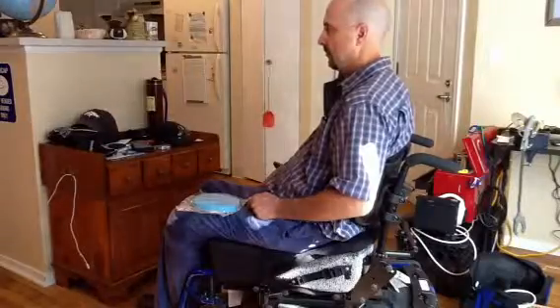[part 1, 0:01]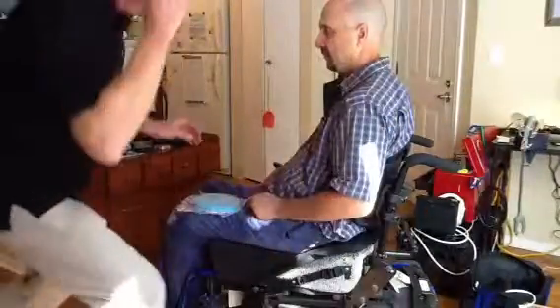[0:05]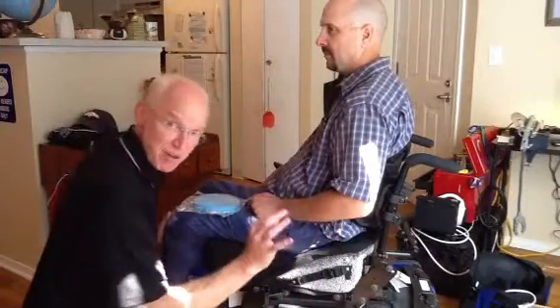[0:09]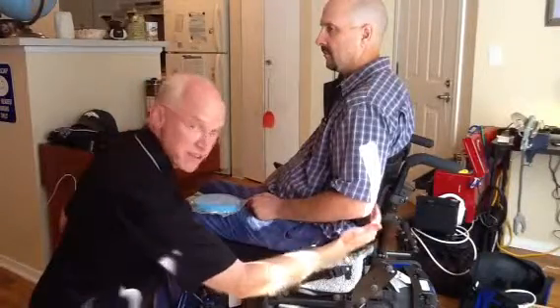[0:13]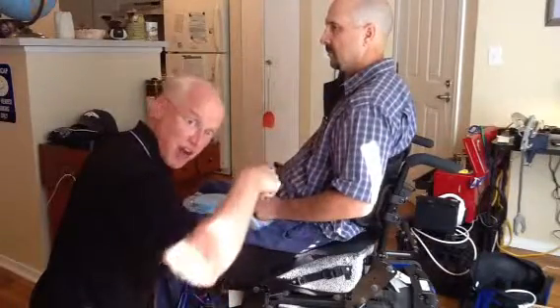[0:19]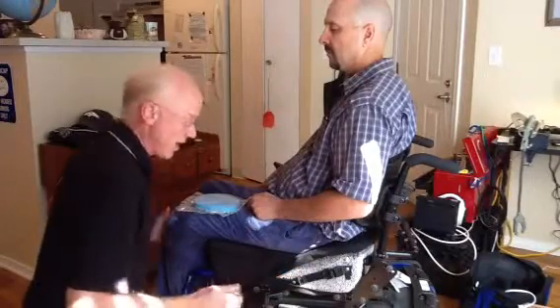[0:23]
Alright, we're here with James Minnick. The previous video, if you didn't watch it, we got James on his new cushion but haven't checked the fit yet because we need to adjust the Java back. So we've fit the Java back to optimize his posture and alignment on the cushion. You want to make sure you've got the posture on the cushion that you're looking for before you check the fit of the cushion. Okay.
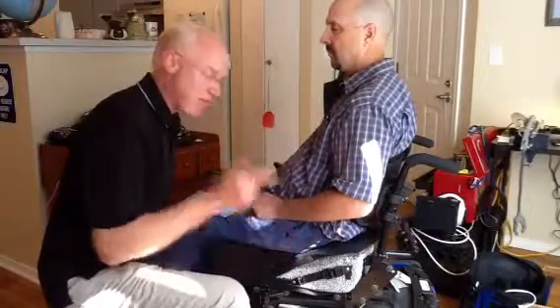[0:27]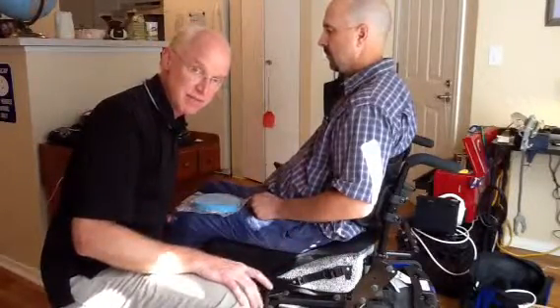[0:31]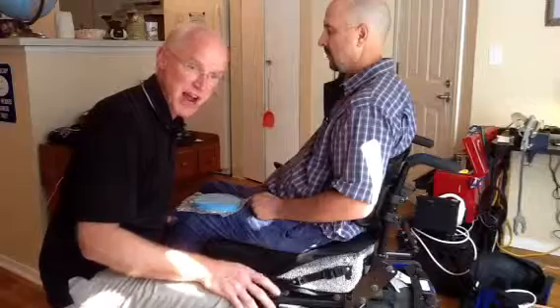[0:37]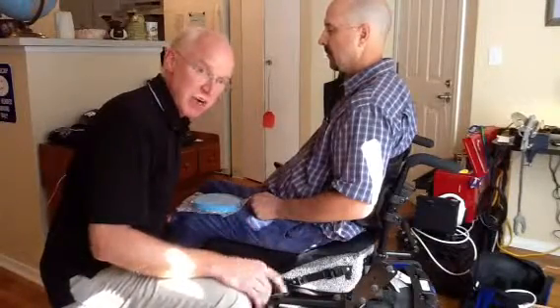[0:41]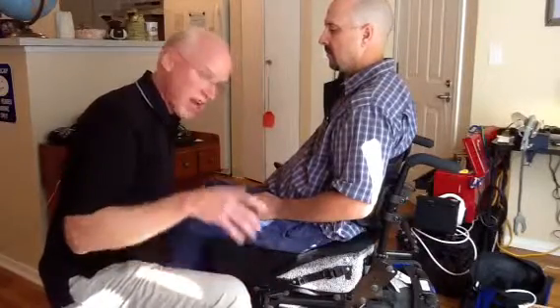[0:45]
Now before I do fit the Ride Custom cushion, before I got James on here, I did a baseline skin check. Okay? So I want to know what the skin looks like before I go onto the cushion, as you would with any other cushion for a high-risk skin client. James is a C6-7 quadriplegic, no sensation, so he is unable to feel or tell exactly what's going on with respect to contact down there.
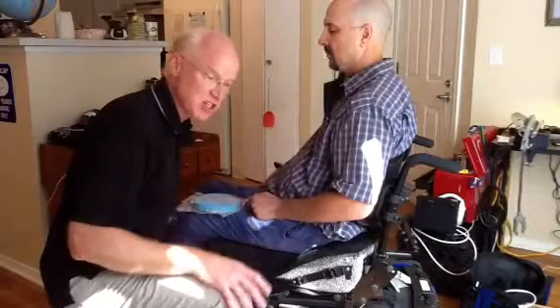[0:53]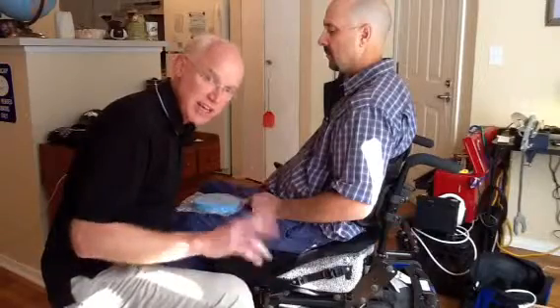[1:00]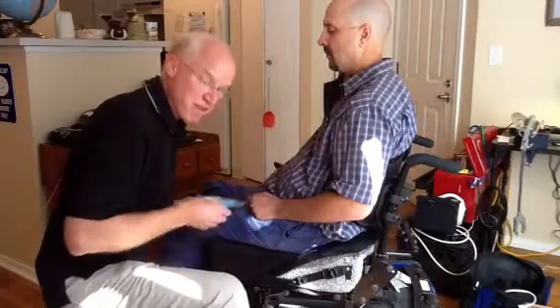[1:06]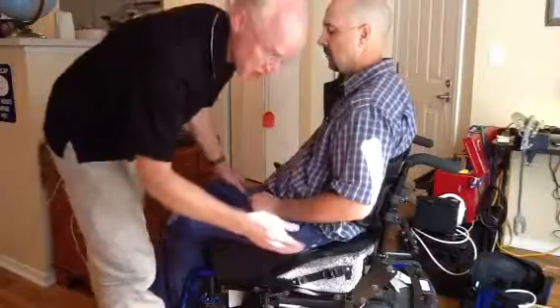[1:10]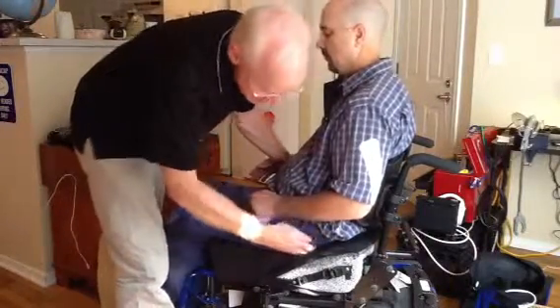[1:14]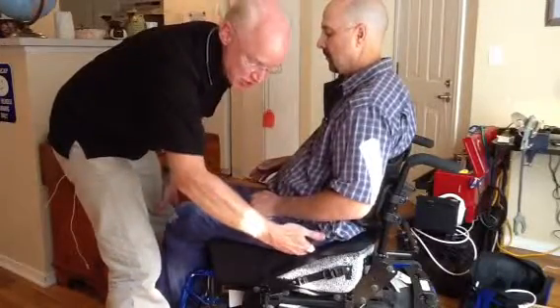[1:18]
So baseline skin check. Next thing we want to do is I want to validate or verify the two qualities of the Ride Custom cushion. The first one being the offloading characteristic. So my first go, no-go for the Ride Custom cushion is position of the trochanters. And I'll go in here, I'm going to palpate between him and the cushion. And I'm going to find the weight-bearing aspect of his greater trochanter, and I'll slide my hand right in there.
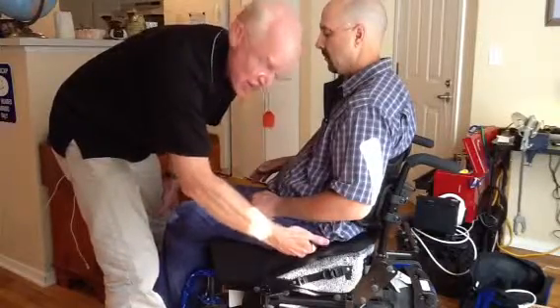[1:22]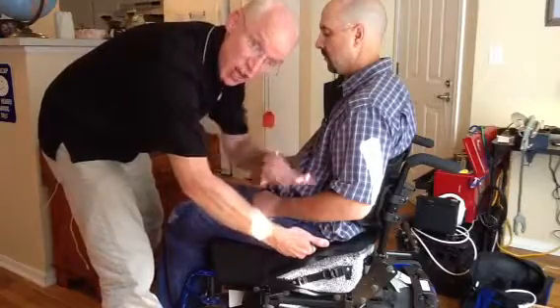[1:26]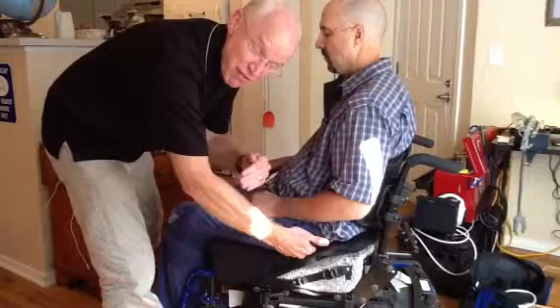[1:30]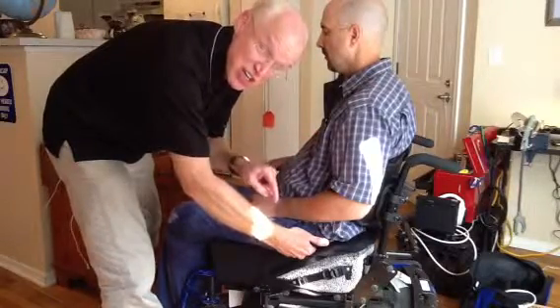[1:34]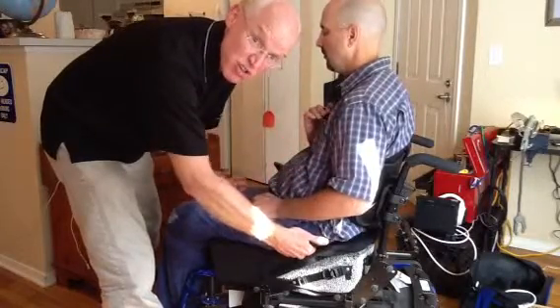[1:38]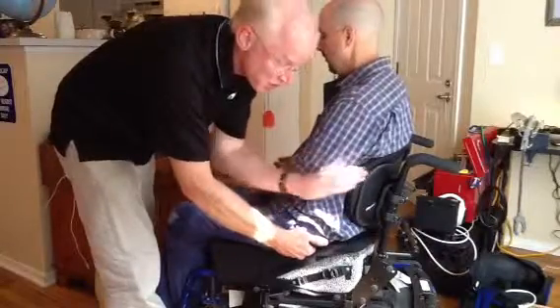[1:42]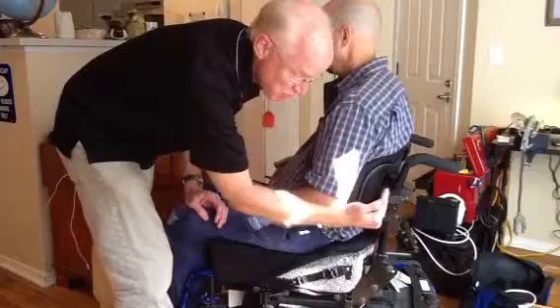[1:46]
I want to make sure that that trochanter is resting in the trochanter contour, that little relief that should be right there. If he's too far back or too far forward, I want to adjust the position of him on the cushion, or the cushion on the chair, or the back on the chair to get those trochanters in the right position. Now we had paid attention to that when we adjusted the back support. Initially my back support was too far back, so I brought it forward to get this in line.
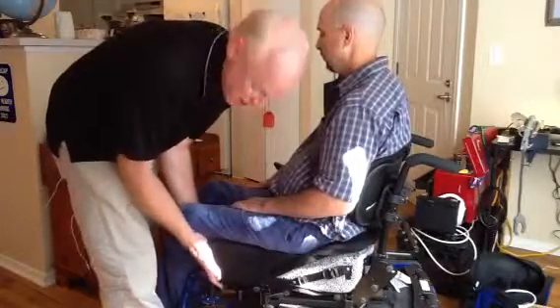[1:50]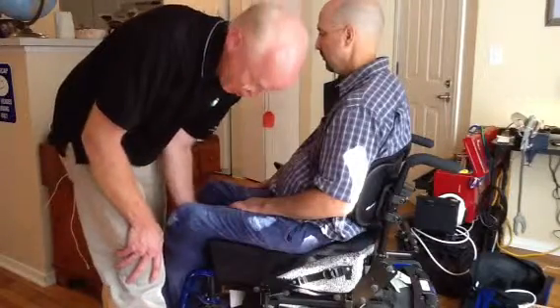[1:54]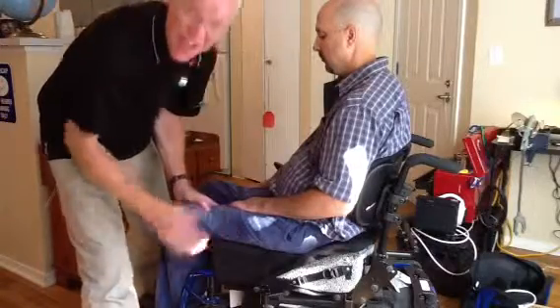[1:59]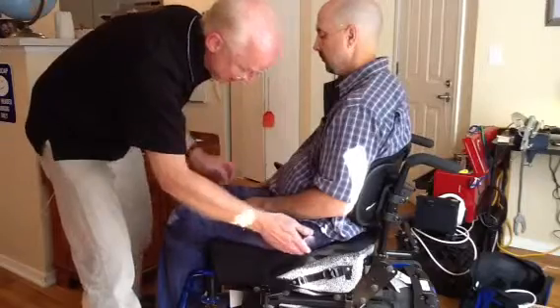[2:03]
The front of the Ride Custom cushion is flush with the seat pan on the front. Footrest height is correct. We got good thigh loading. We're ready to move forward. Trochanters are in the right place.
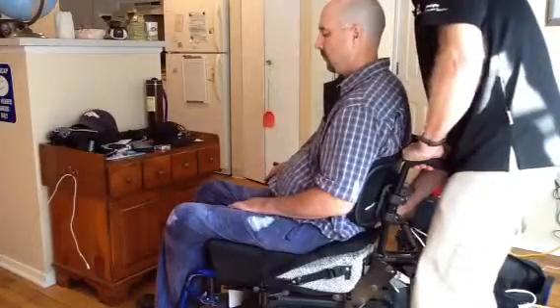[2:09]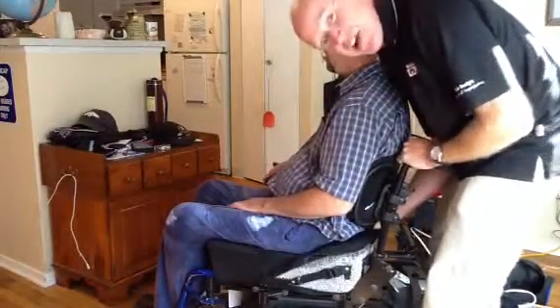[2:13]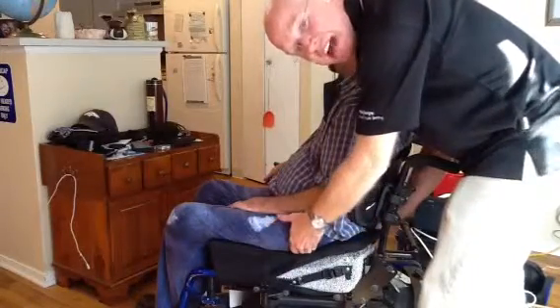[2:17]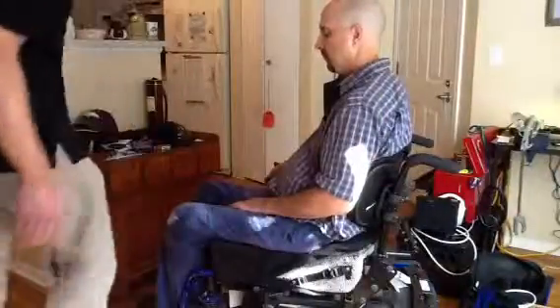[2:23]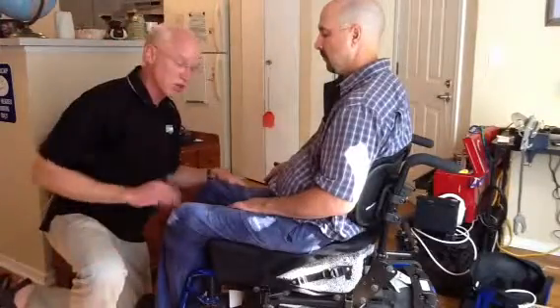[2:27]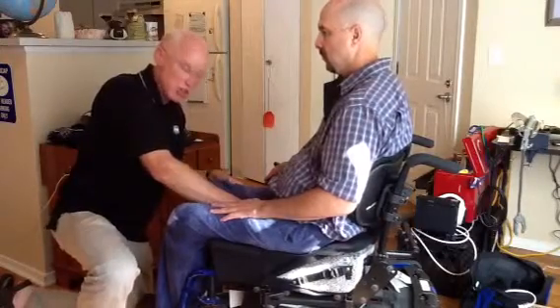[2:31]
Next thing I want to do is I want to reach back between him and the back. I'm checking the coccyx and sacrum. There's no contact at the coccyx and sacrum. That's what we want. There's soft tissue contact, but no heavy bony loading at the trochanters. I also want to check that we're not crowding too far into the groin area as well too. So I'm just going to slide my hand down, make sure that we're not too close there. That's an easy modification. Okay?
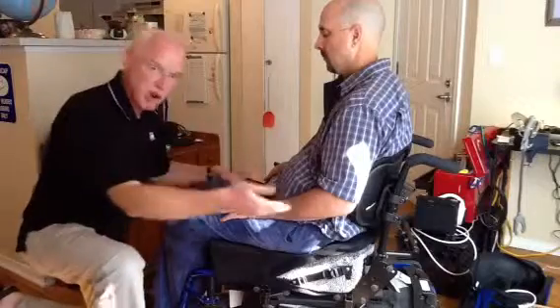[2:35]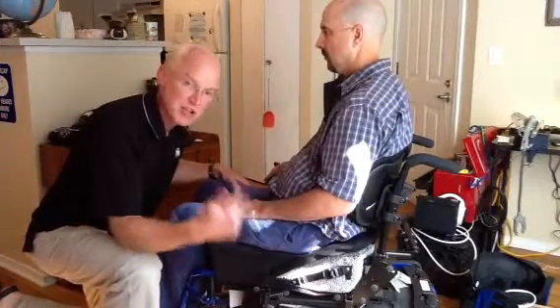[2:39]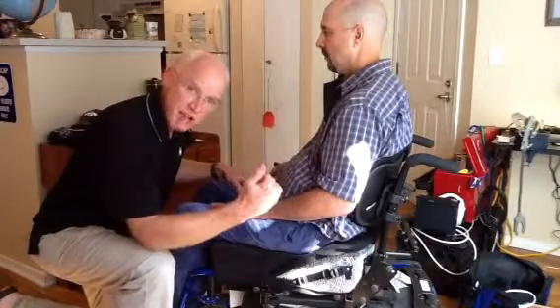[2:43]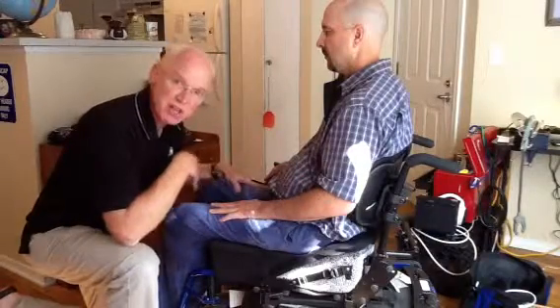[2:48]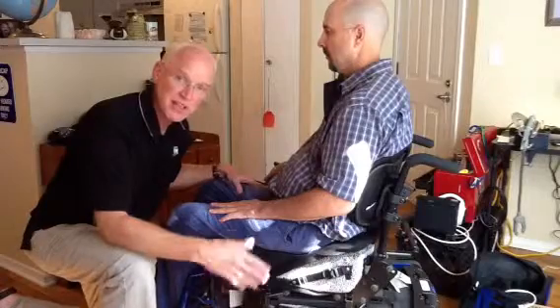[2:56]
So all of the trochanters, palpate trochanters, don't go forward any further until those trochanters are where they need to be. Then I'm checking the coccyx and sacrum. We don't want any contact there. And I want to make sure that he's not crowded too severely in the perineum. I want good air space at the coccyx and sacrum and the perineum to get airflow underneath them as well too. Not to mention keeping pressure off of those sensitive areas.
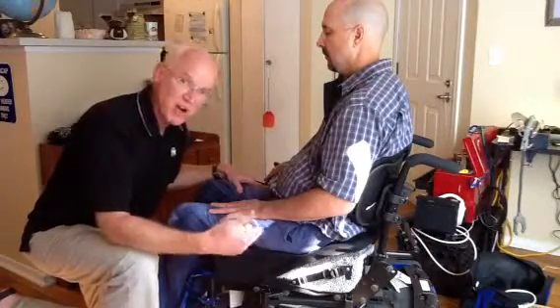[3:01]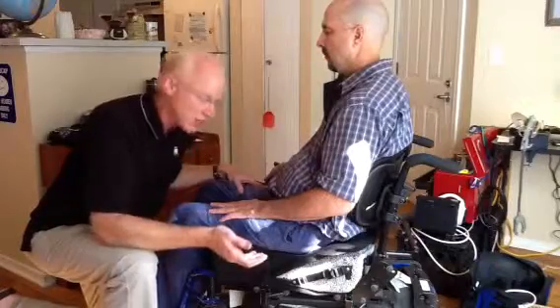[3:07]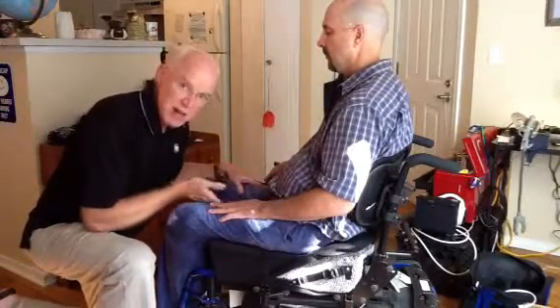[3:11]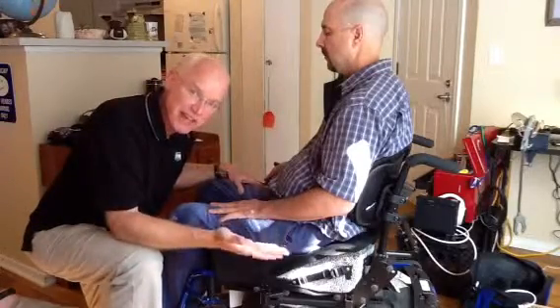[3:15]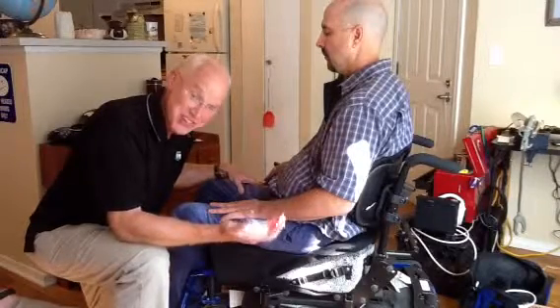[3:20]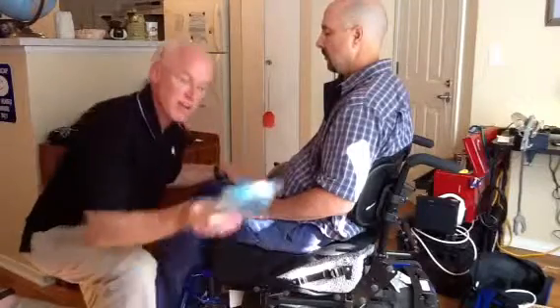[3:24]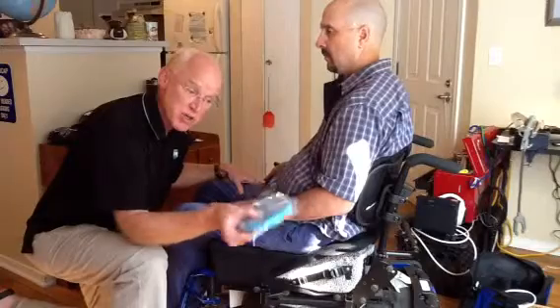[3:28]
The next thing we need to do is establish if his ischial tuberosities are properly offloaded. Now, typically in our clinic, the Aspen Seating Clinic, if we've got the sacral area open and or the groin area, we'll literally insert our hand underneath the client and palpate the ischial tuberosities and see if there's sufficient clearance. But each cushion comes with a gauge though. Another thing is this gauge, which is the Ride gauge, which is going to collapse if he's making contact.
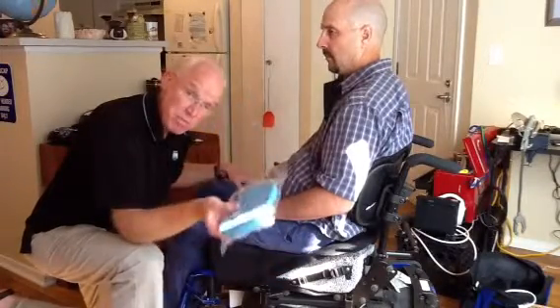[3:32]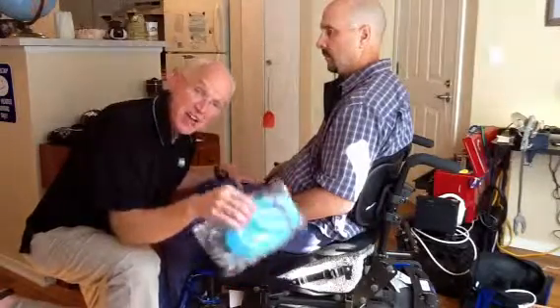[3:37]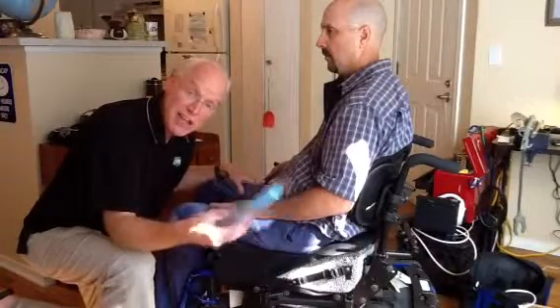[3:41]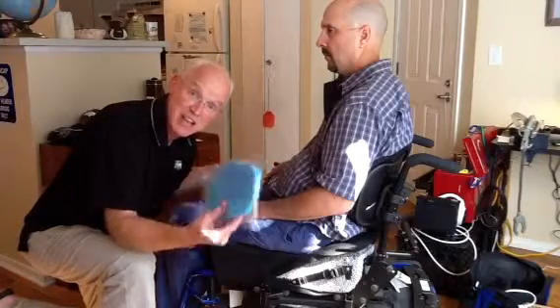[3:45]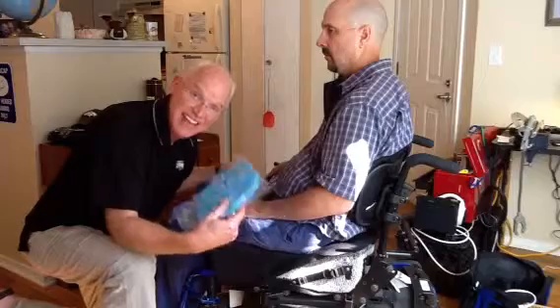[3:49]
I'm going to help James lean forward, slide this underneath him, underneath the cover, in the well of the cushion. Then we'll bring him upright, and then we'll repeat that and look at the gauge and see if he's making contact or smashing this gauge, telling us that we have insufficient clearance at the ischial tuberosities. Okay, you ready to try this?
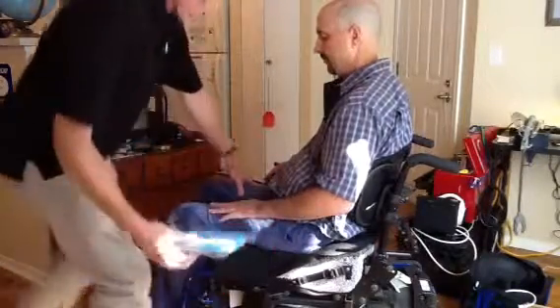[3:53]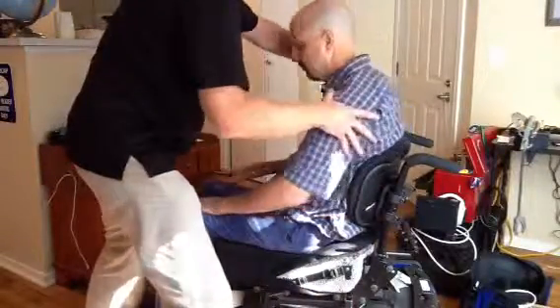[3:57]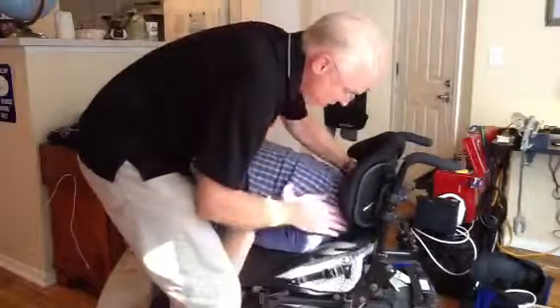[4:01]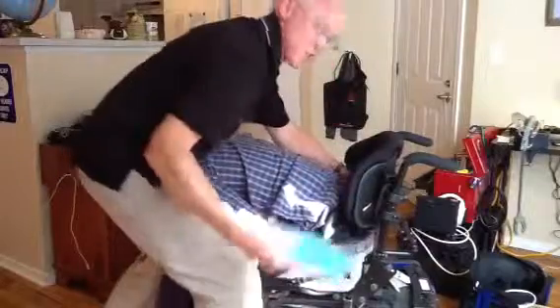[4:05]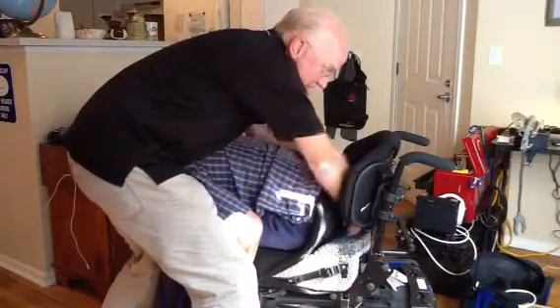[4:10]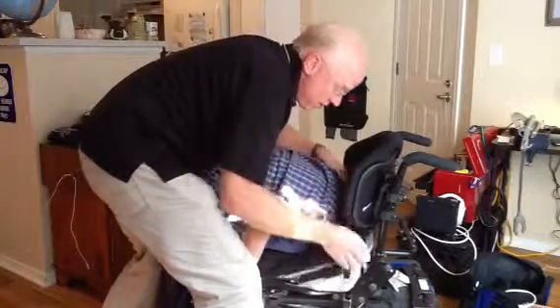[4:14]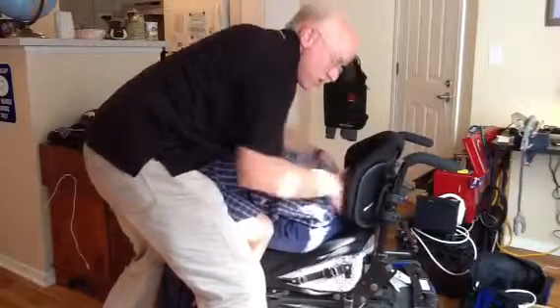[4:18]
All right, James. All right, so I'm going to put my gauge right here where I can grab it. Go ahead and lean forward. Oftentimes, I find the quads that I work with are able to just fold themselves in half. Instead of putting this in the well before, I can just slide this in underneath him, rest it down in the well, get the cover back over the back corners of the cushion. Okay, James, come on back up.
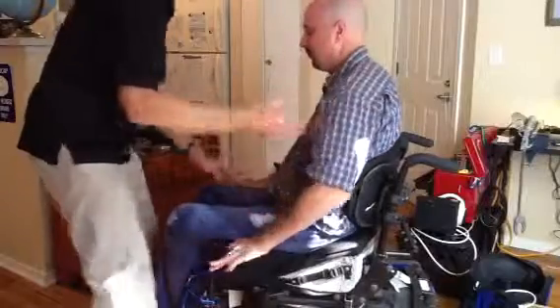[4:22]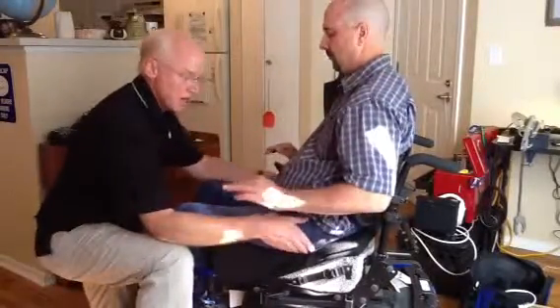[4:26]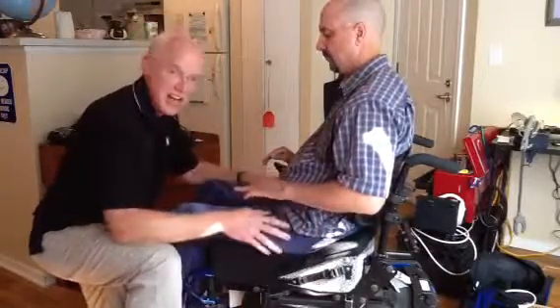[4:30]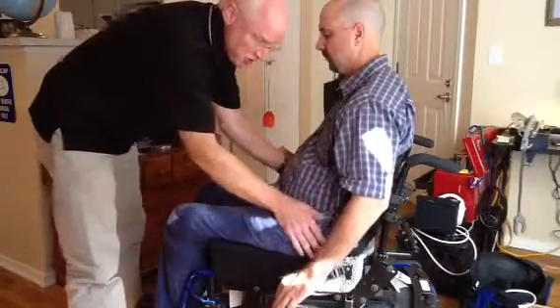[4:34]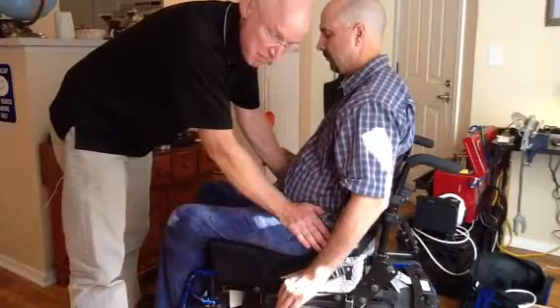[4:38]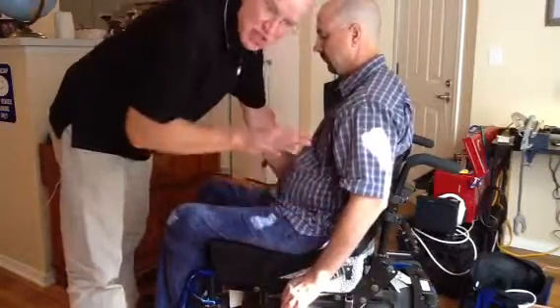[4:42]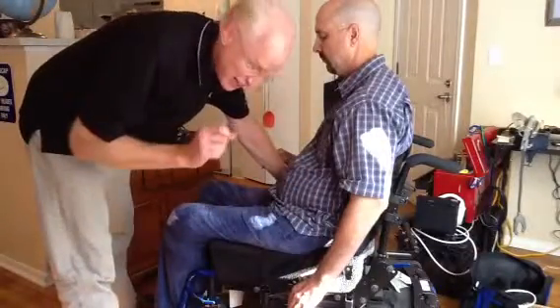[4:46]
Alright, so I've got him back on the cushion. He's maintained his position. The gauge is underneath him. What I'm going to do is come in and simulate a little bounce down over a threshold or a bumpy road. I'm just going to give a little overpressure to him, get those ischials to go down a little bit to see if that impacts that clearance.
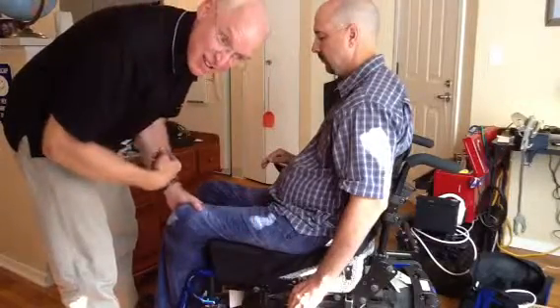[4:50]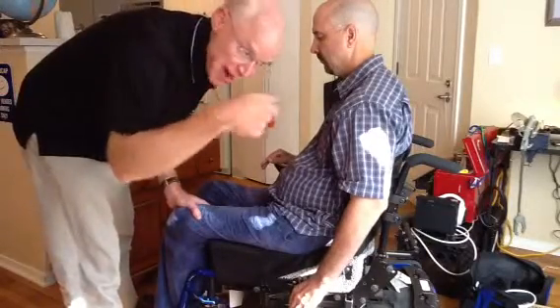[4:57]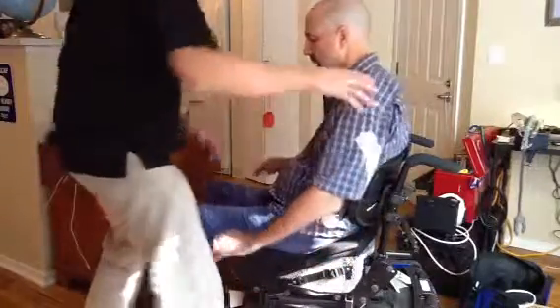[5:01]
Okay, so now we've sat on it. What we're going to do is lean forward again, and I'm going to make sure that that gauge still has sufficient thickness. What you won't be able to see is me actually looking at it, but I'll pull it out so we can see it on the video. Okay. So James, lean forward.
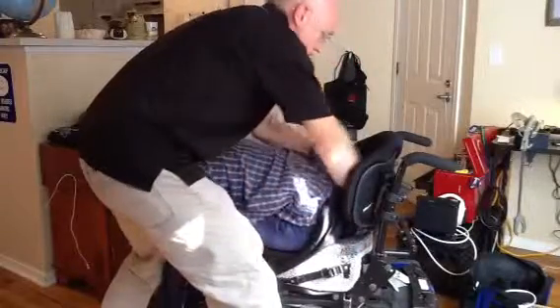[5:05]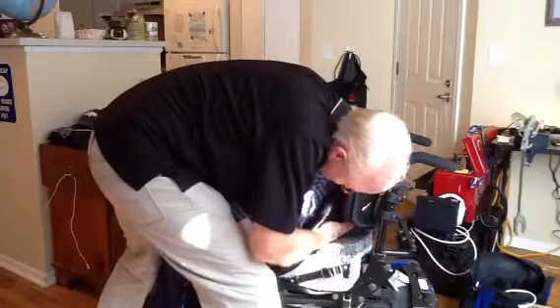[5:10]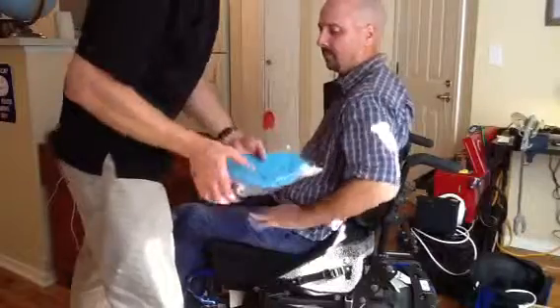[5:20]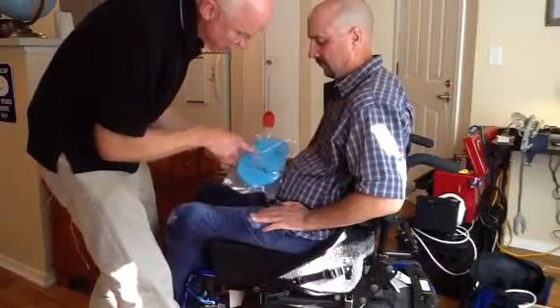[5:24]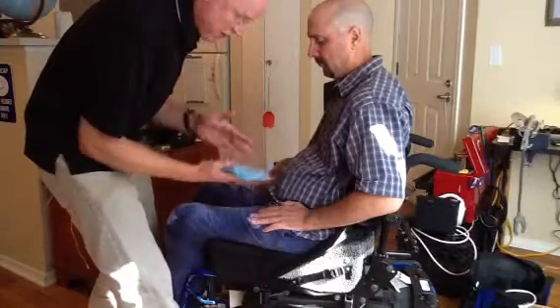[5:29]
And I can look down in there. It looks like there's no contact at all. I'm going to pull it out. And what you will see here, James, you can go ahead and sit back up, sir. What you see here is that all you've got, James, is just a real mild imprint of the spacer fabric cover. No ischial imprint there.
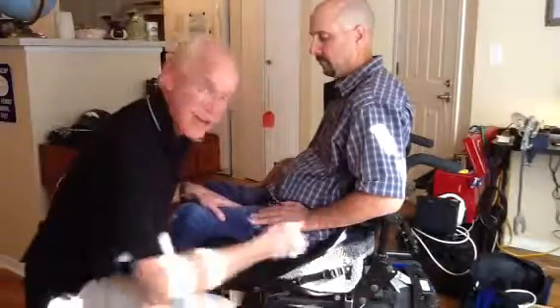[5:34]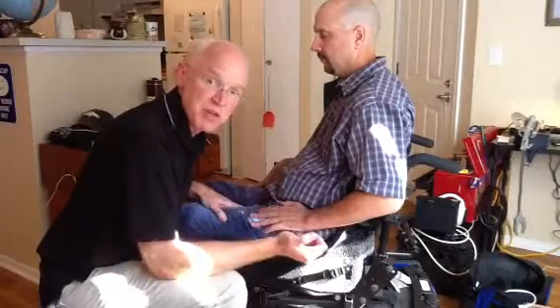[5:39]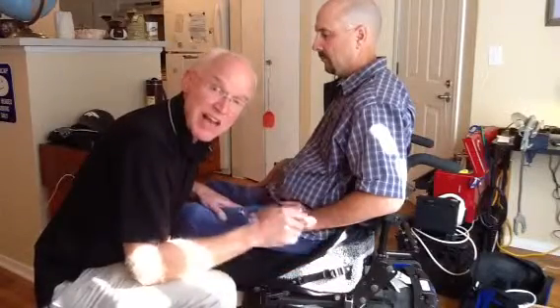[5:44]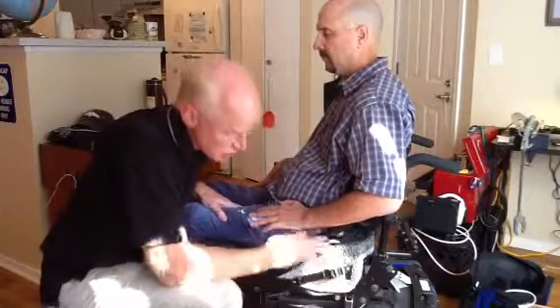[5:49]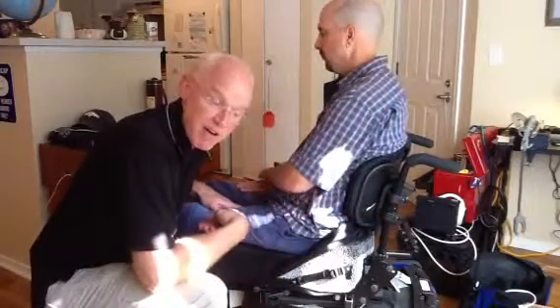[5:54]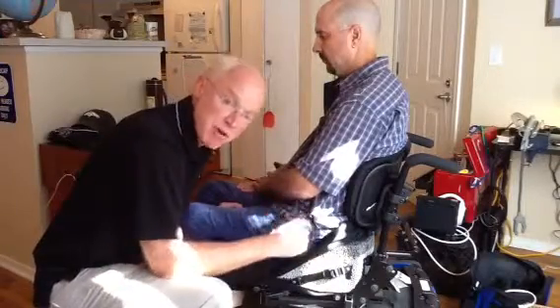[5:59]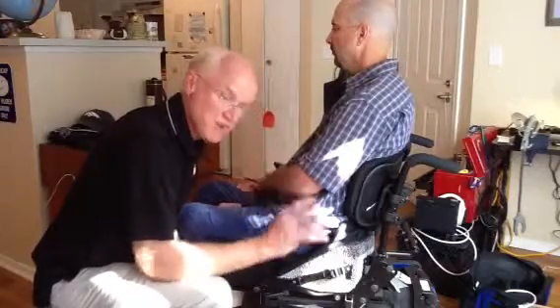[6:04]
So that should give you good confidence that we've got trochanters properly positioned and offloaded, coccyx and sacrum, perineum, and ischial tuberosities. A future video will tell you how to address any shortcomings of those if you're fitting it, how to adjust to improve ischial clearance, which you can do with the cam straps or modifications to the shape or any other of these areas. But what we just did was go through verification of proper orientation of those bony prominences and proper offloading. So we just verified the offloading characteristics of the cushion.
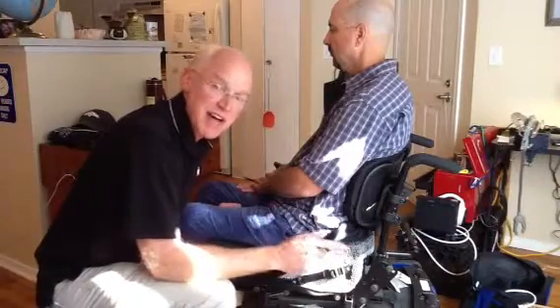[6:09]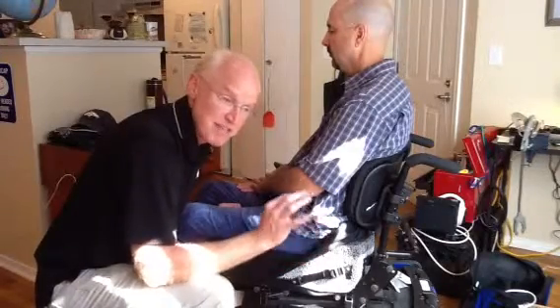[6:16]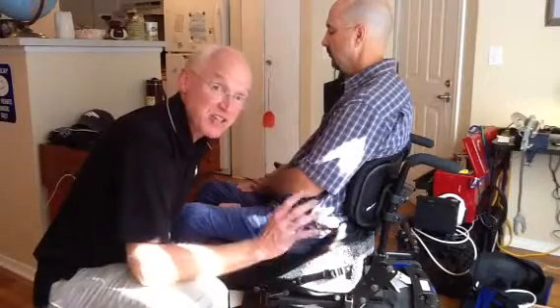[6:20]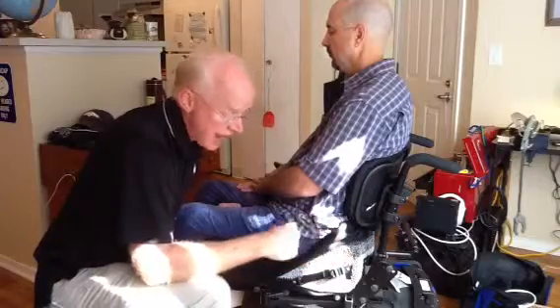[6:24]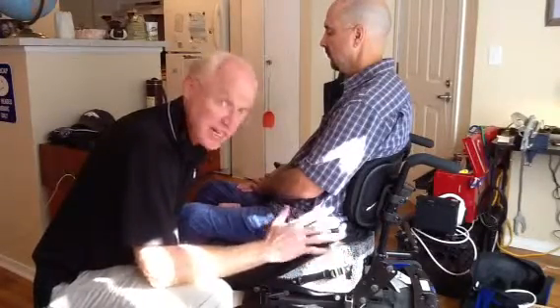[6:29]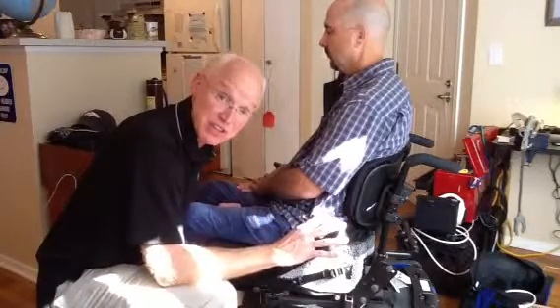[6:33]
Now we have to verify the loading qualities of the cushion, which is the most difficult part. And there's only one way to verify the loading qualities of any cushion, and that is through skin checks. So we did the baseline skin check. I have validated and adjusted, although we needed no adjustment, the offloading characteristics of the cushion.
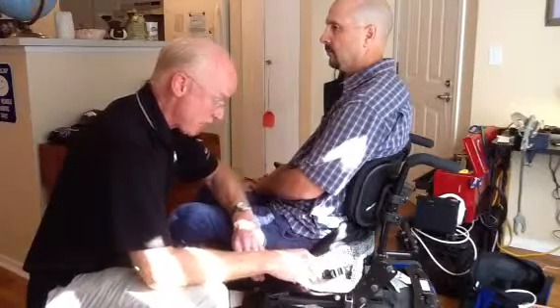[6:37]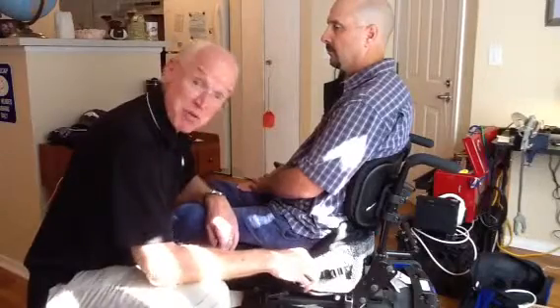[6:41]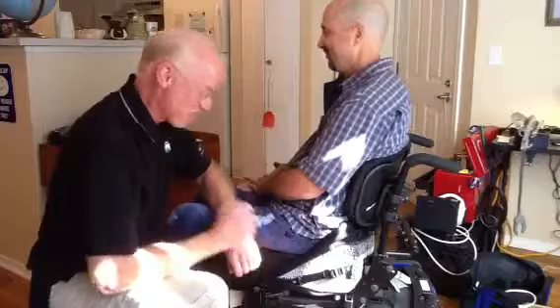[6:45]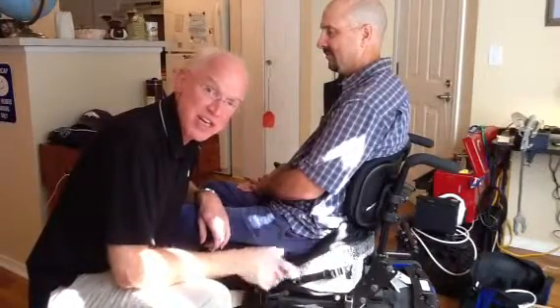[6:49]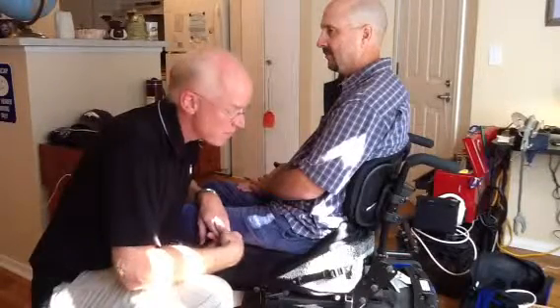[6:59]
Now what we're going to do is I'm going to look at my watch, and I'm going to say, it's 10 till 5. That's almost happy hour. Let's go. But we're going to sit for 30 minutes, and then we're going to do a skin check. Skin check looks good. I'm going to go back on there for an hour, and I'm going to instruct James to slowly move up in his sitting tolerance to make sure that his skin responds favorably.
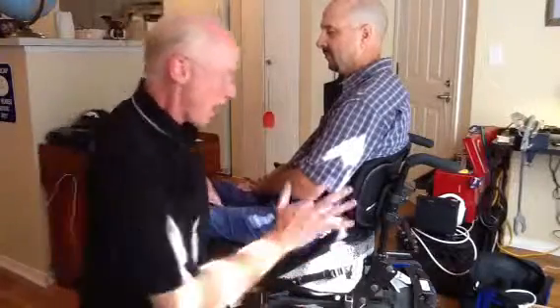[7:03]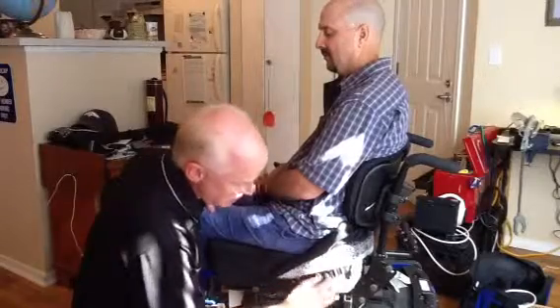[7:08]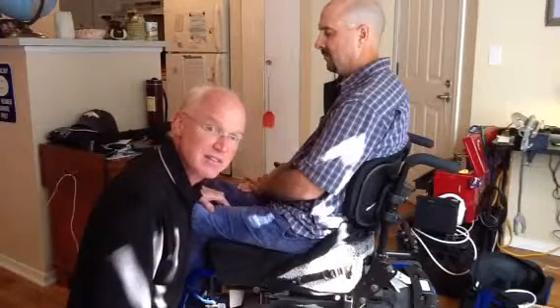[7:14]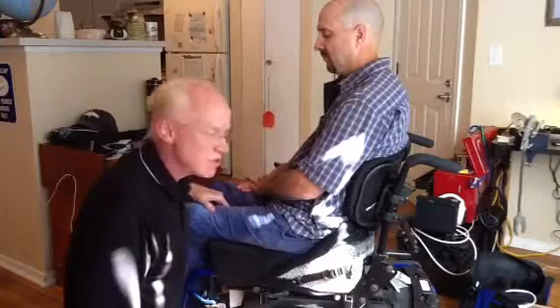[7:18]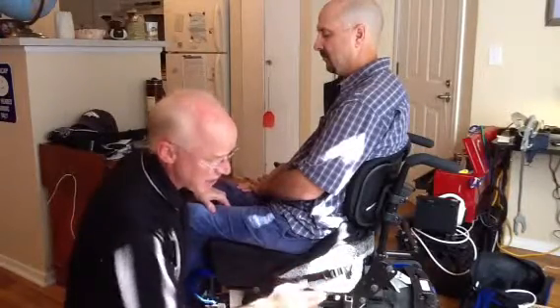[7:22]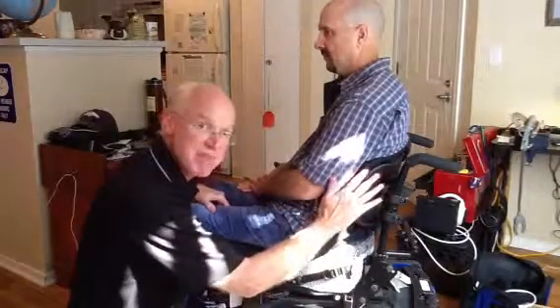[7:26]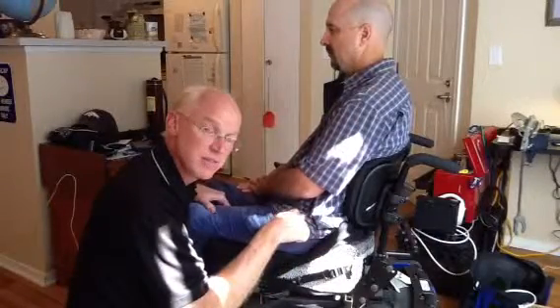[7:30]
So that's it. To review, I'm going to take the cushion out of the box. I'm going to make sure all these cam straps are just snug. I'm going to make sure the cushion is positioned correctly on the chair. I'm going to do a baseline skin check on James. I'm going to assist him in a transfer, if needed, onto the cushion back support. I'm going to adjust my back support to make sure I get the posture I need on the cushion.
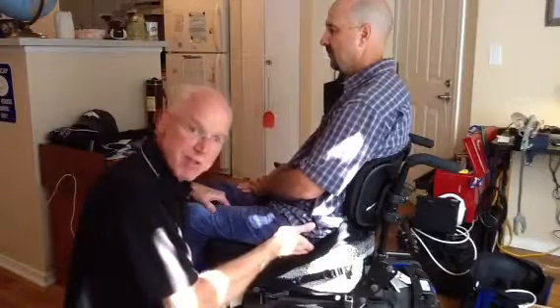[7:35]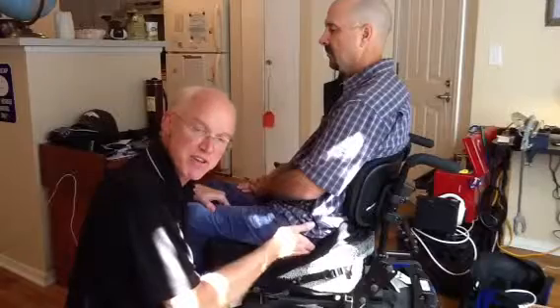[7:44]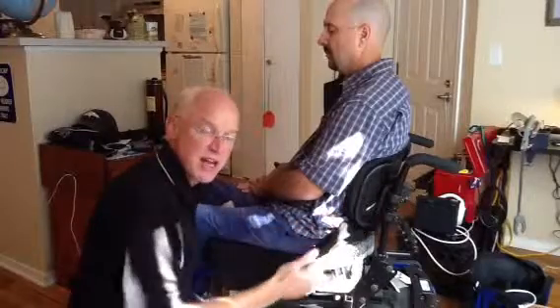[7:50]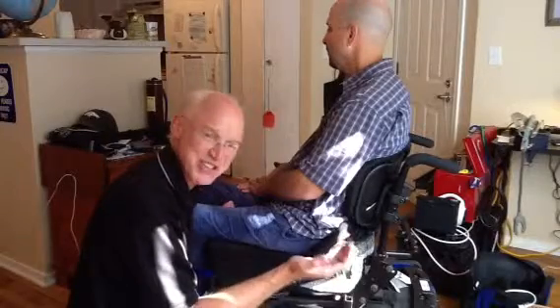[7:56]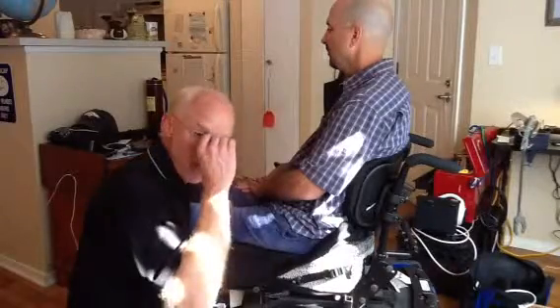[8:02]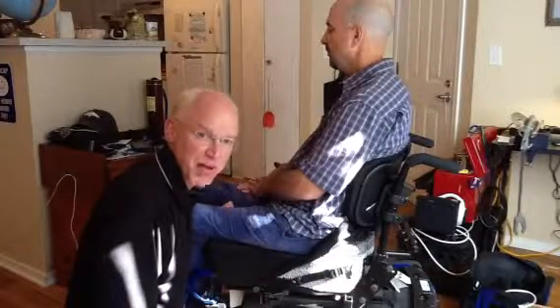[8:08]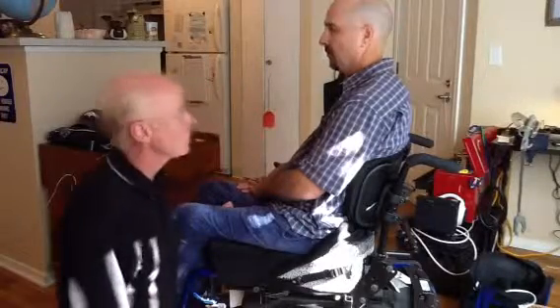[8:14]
Then I'm going to go back to the cushion and palpate the trochanters for the right position of the trochanters in that trochanter relief. Soft tissue contact at the trochanter is okay, but you should not feel heavy bony loading. I'm going to then check the groin area, coccyx and sacrum, and then either use palpation to reach underneath and check the ischial tuberosities, and/or the gauge to evaluate offloading. Once I have offloading adjusted and verified, we're going to start our sitting assessment, build tolerance to the cushion, watching skin, and ensuring that the fit is satisfactory. Feeling pretty good? Feels great.
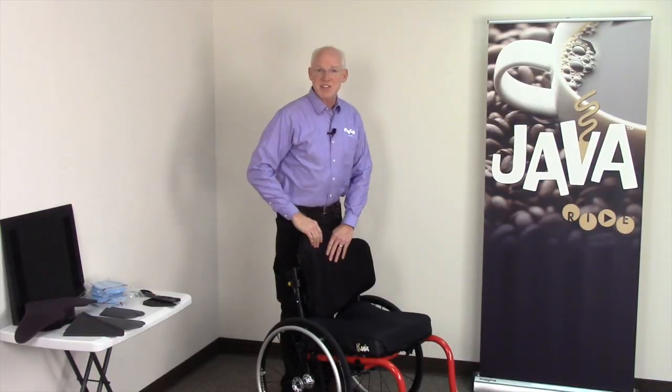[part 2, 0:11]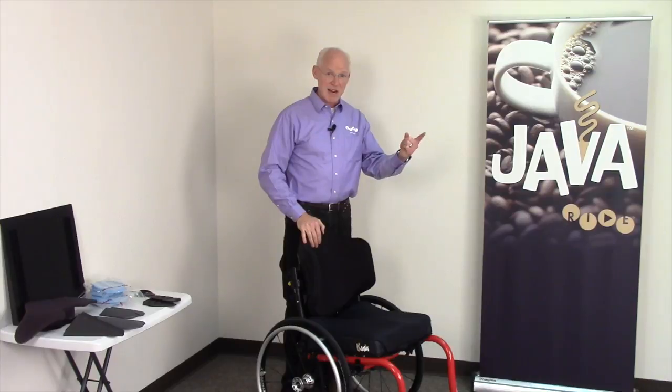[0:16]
I'm Tom Hetzel of Ride Designs. This is part two of the Java Cushion Trilogy: theory, fitting, and then fitting with the back support.
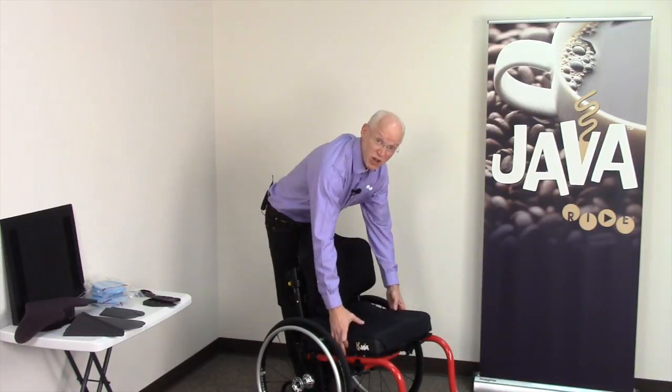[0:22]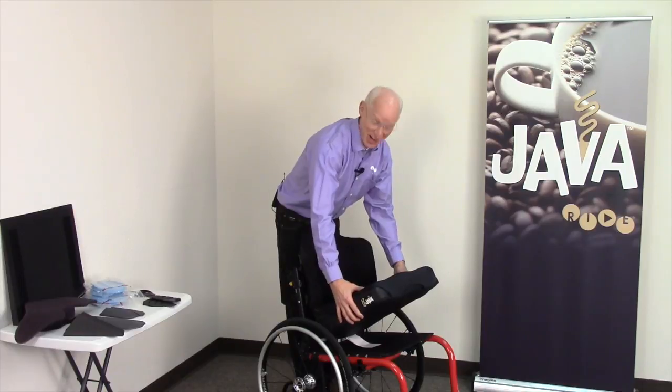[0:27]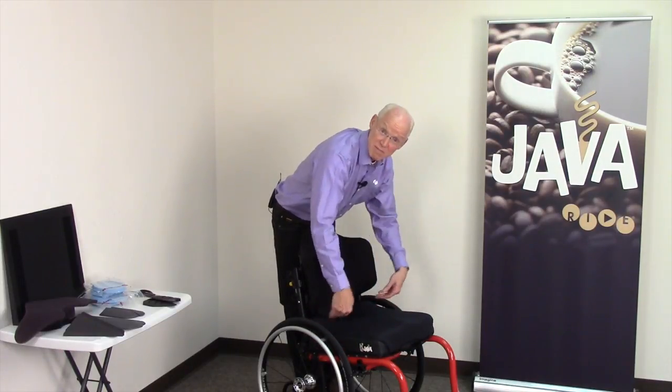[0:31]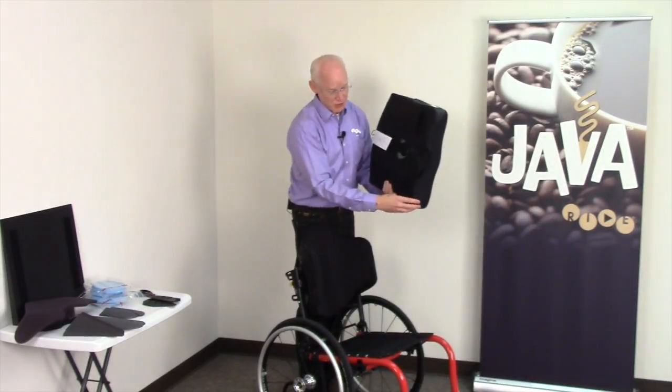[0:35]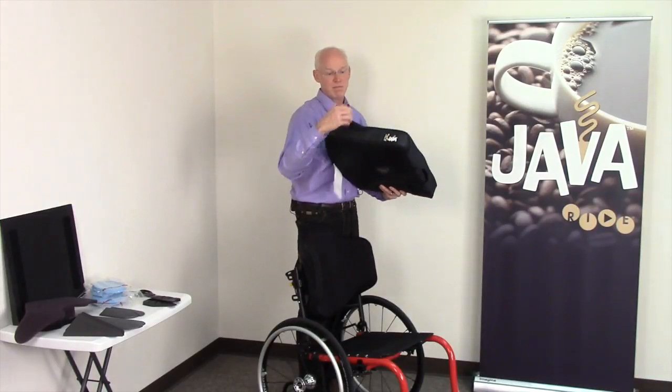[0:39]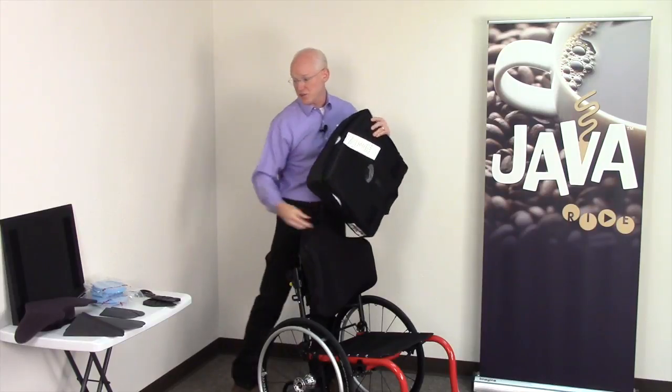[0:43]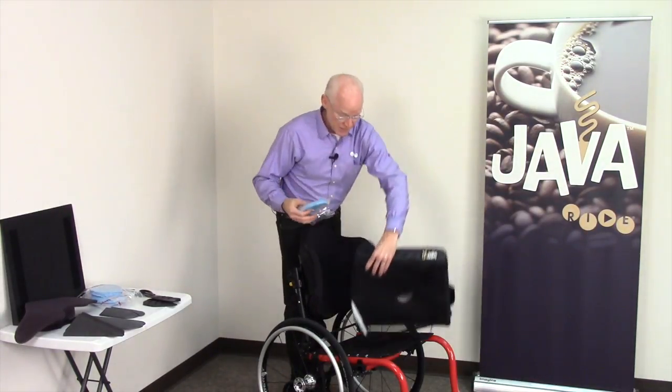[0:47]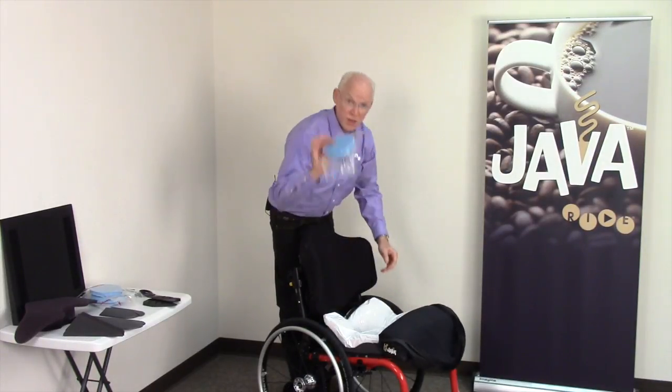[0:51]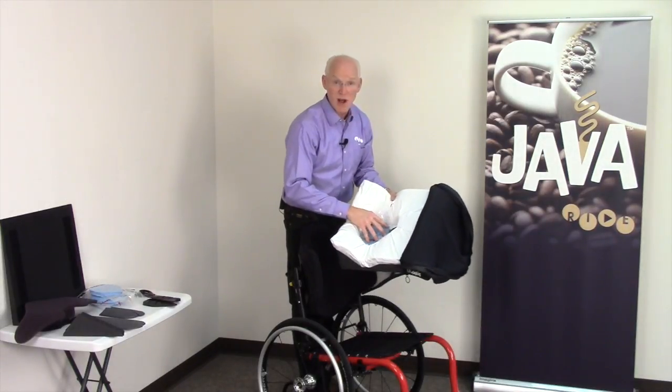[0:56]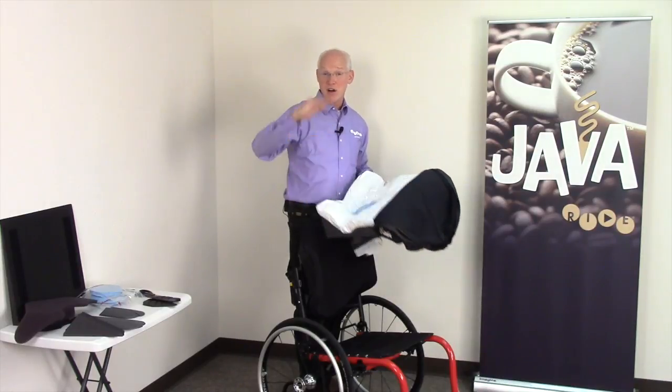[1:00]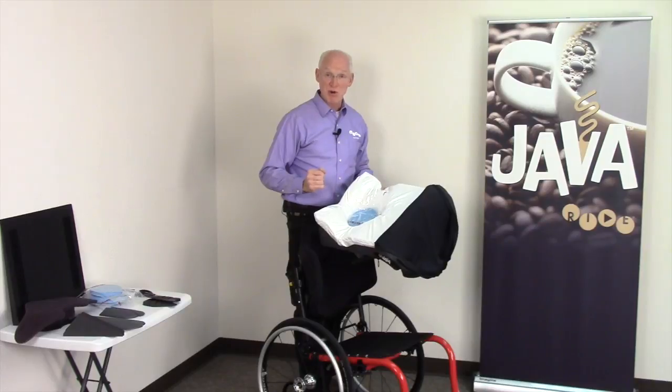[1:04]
When fitting the Ride Java Cushion, it's important to, first of all, get the cushion correctly onto the chair. That's getting the back corners to the back of the chair. Before transferring the client onto the cushion, you'll need to place a gauge, this is a gauge that comes with the cushion, in the well. The well gauge is placed down in the well. This is going to help us to determine how far he is offloaded from his ischial tuberosities.
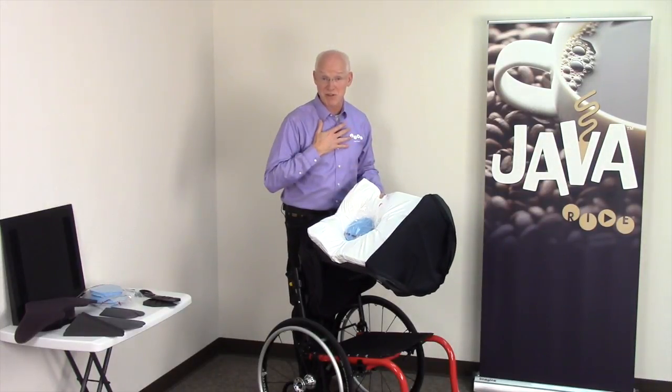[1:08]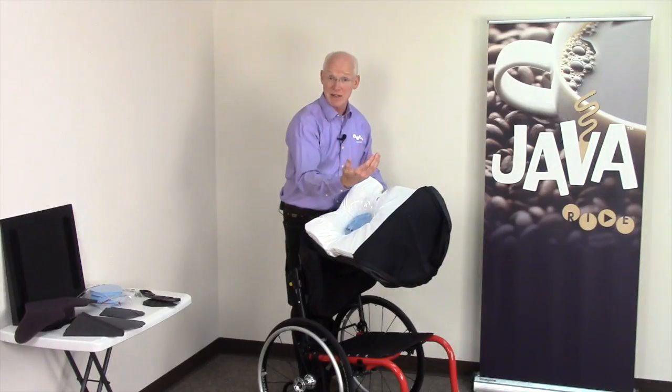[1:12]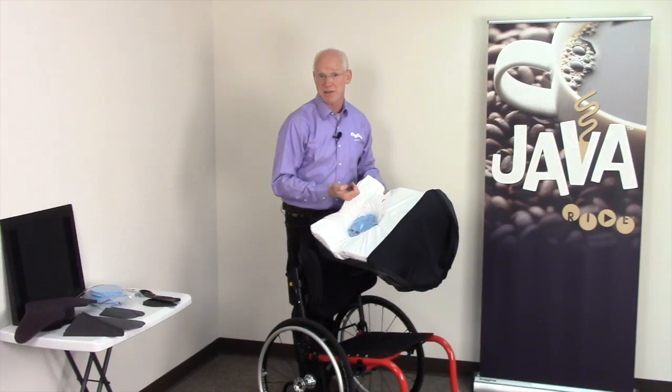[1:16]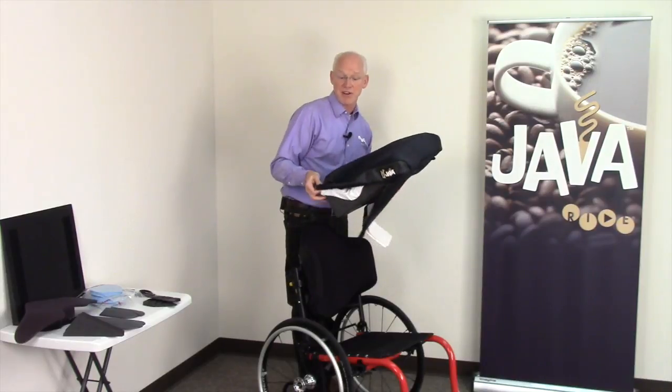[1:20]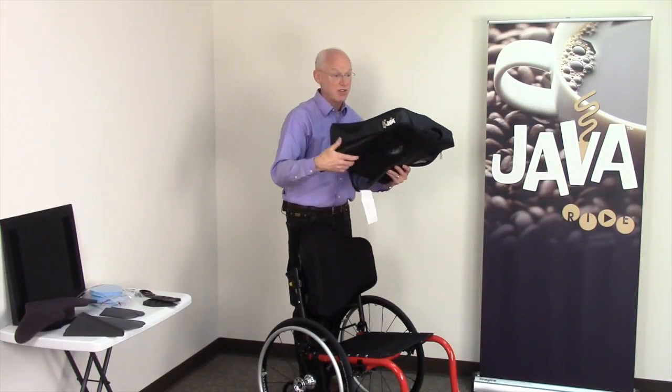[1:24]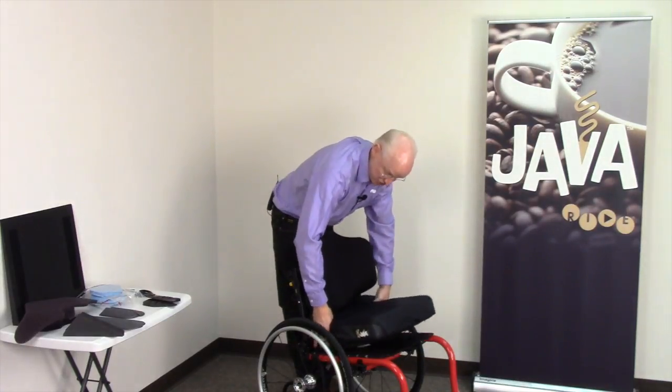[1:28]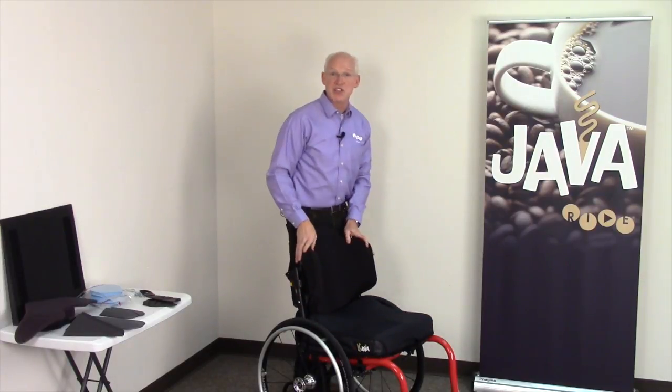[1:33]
An alternative to the gauge, which is my personal preference, is to actually go in when he's sitting on the cushion and palpate, feel where those ischial tuberosities are, and make sure they're not touching anything and that they're not bottoming out. But the gauge is a great device for those who would rather not be going there. So with the cover re-secured, I may leave it unzipped to get easy access to it. I'll put the cushion on the chair correctly.
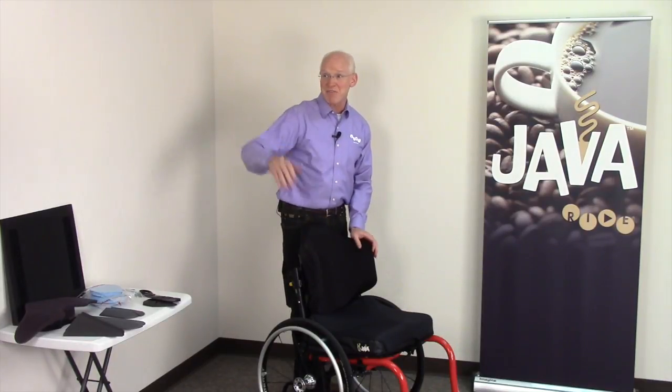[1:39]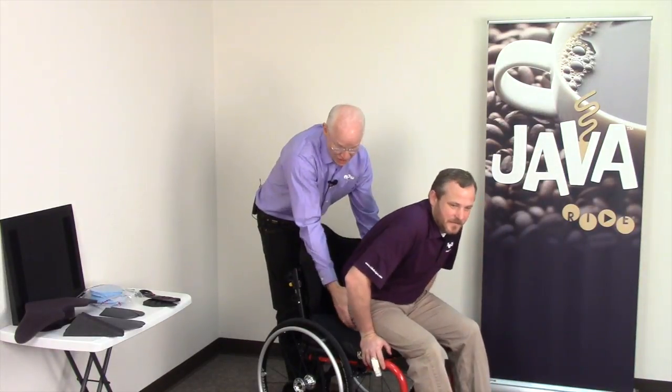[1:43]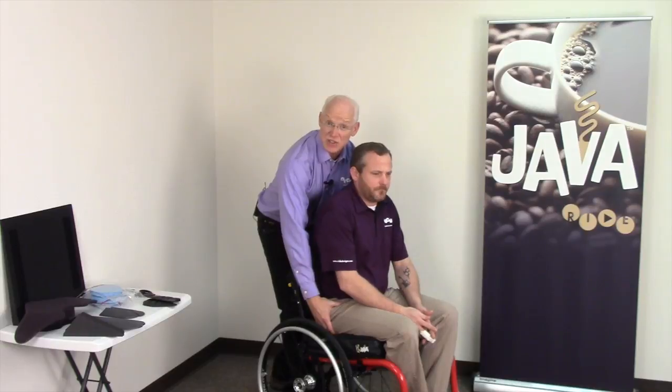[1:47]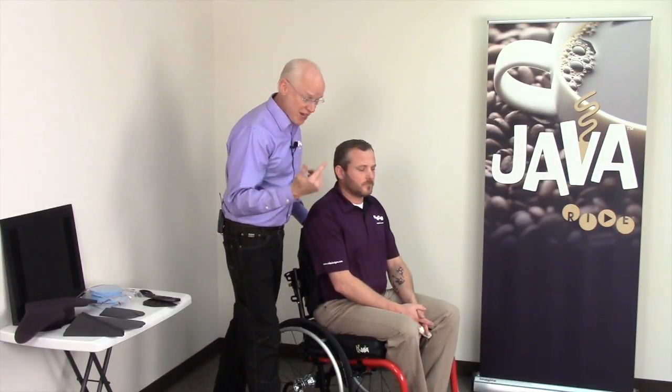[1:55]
Now I've got the right Java cushion on the correct chair. All I need is a client. I've got Ryan from customer service, our customer service manager. I'm going to help him get on that cushion and get back without damaging that gauge. So you want to try to help him get on there to aim his ischials down into the well, get him on there correctly. Now, my first thing I want to check to make sure is that he's sitting on the cushion getting some support.
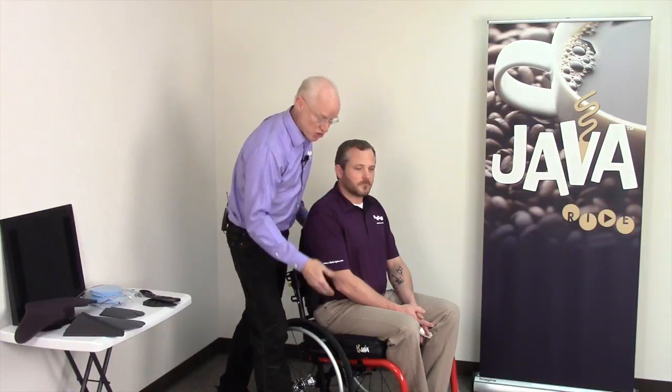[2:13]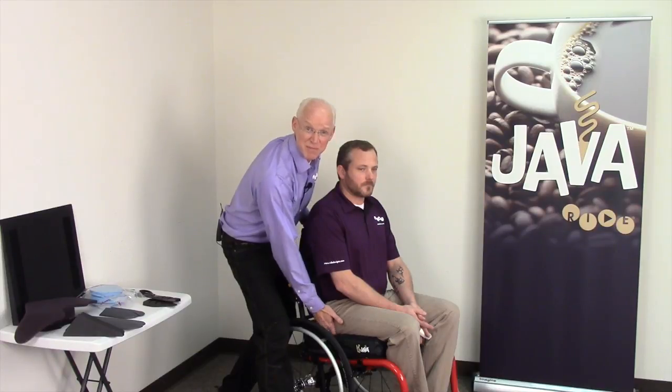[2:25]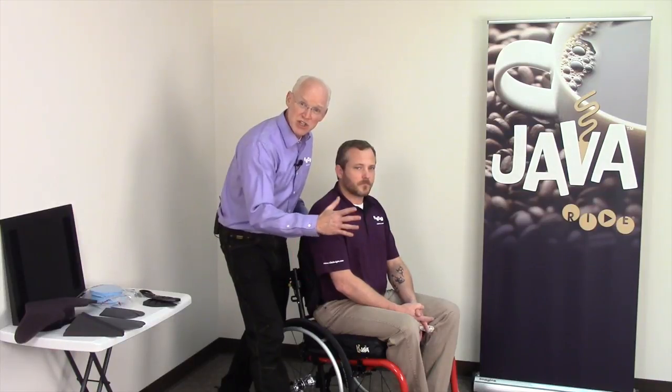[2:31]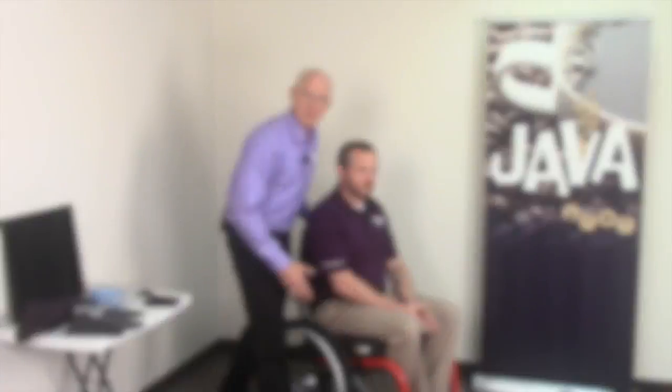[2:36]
Right, okay. His legs are loading nicely. He's bearing some weight on his feet, so it looks pretty good. Now, I want to make sure his position on the cushion is correct. And the best way to find that out on any Ride product, be it the Forward, Custom, or Java, is to make sure the greater trochanters are resting where we call the trochanter groove, that mild relief just on the side of the cushion. And sure enough, with that help I gave him, that greater trochanter is resting right in that groove. If that trochanter is not resting in that groove, you need to adjust your back support, cushion position, or position on the chair to make sure that we've got him sitting correctly. Okay? So first, trochanter in the trochanteric groove.
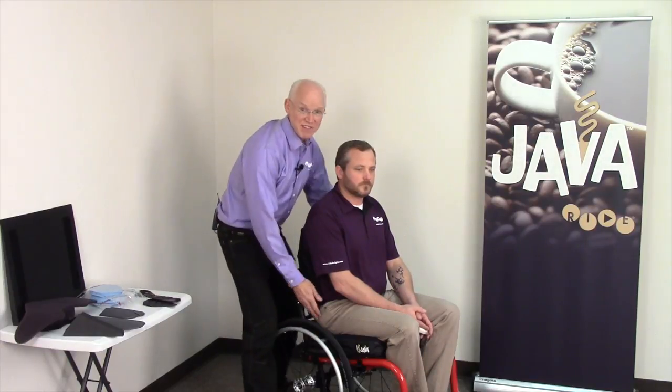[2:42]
Once I've got that done, I'm typically going to make sure that my back support is set up correctly. I'm going to cover that in part three. Right now, we're going to say back support's working, foot support is correct, trochanters are where they need to be. Once I've got the trochanters in where they need to be, I need to now check the other areas that we need to be protecting. First, coccyx and sacrum. I'm actually going to be inserting my hand behind Ryan to make sure that there's no contact at his coccyx and sacrum.
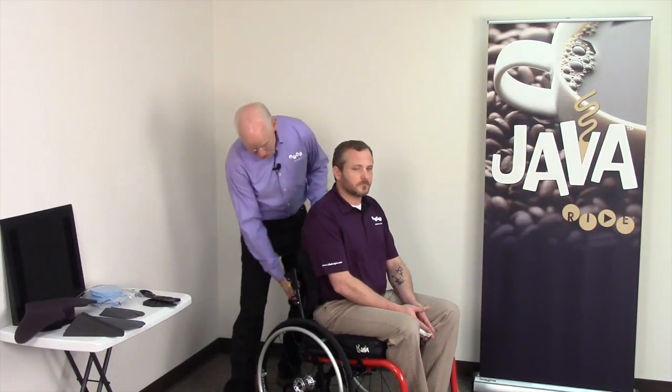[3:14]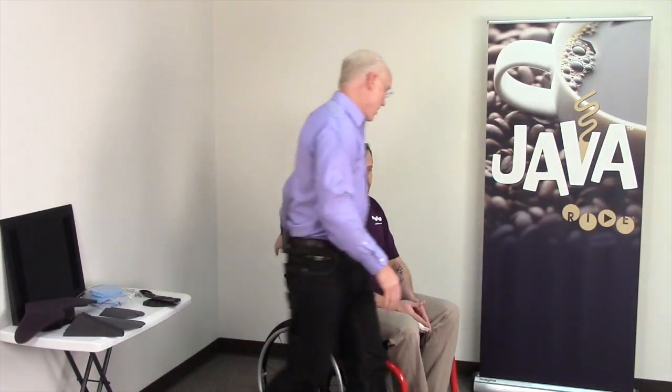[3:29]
So I'm simply going to reach back in here and right down behind at his coccyx and sacrum, right down into the well, I feel absolutely no contact at that coccyx and sacrum. So that's good. And then, typically I will actually assess right in the perineal area, the groin area, to make sure that he's got room there as well. Now I need to make sure that the ischial tuberosities are offloaded.
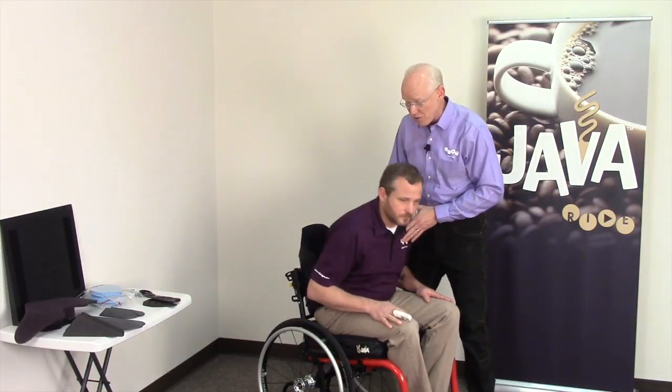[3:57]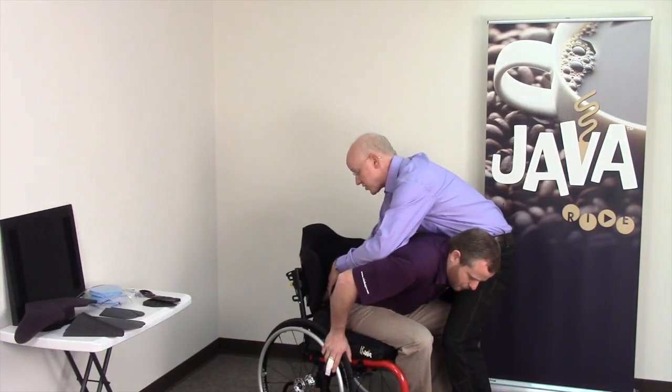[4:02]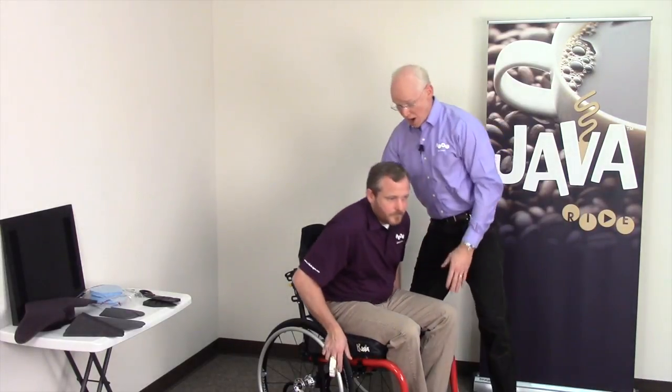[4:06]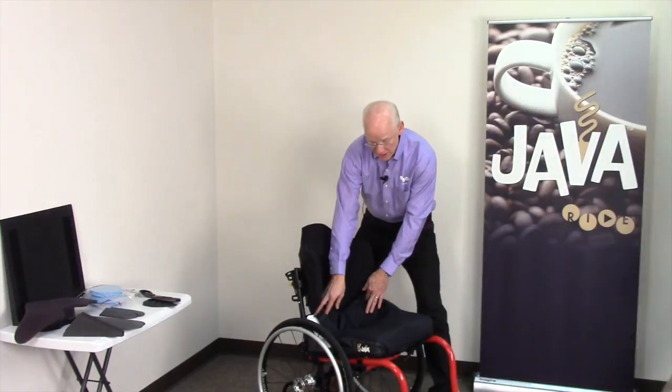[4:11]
So I need to get the client off the cushion without disturbing the gauge. That means a lift or a mechanical lift, something to help him come straight up off of that cushion. Or in many cases, I know when I'm working with folks with spinal cord injury, oftentimes I can get them to lean right over, block them, and actually reach down in there and check the gauge. Or we can lift him off. So we're going to lift you off of there, Ryan. Once you pop up off of there for a second, step to the side, I can then pull the cover forward and check the gauge.
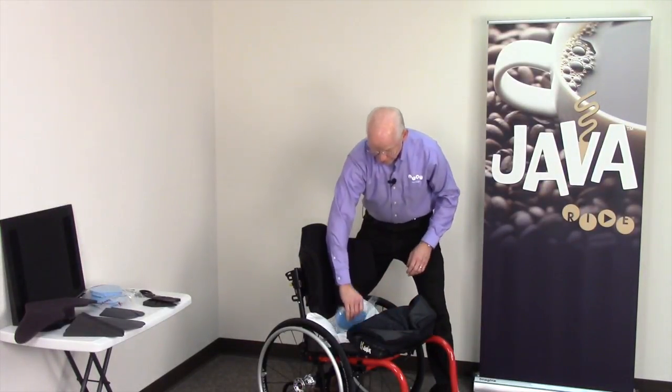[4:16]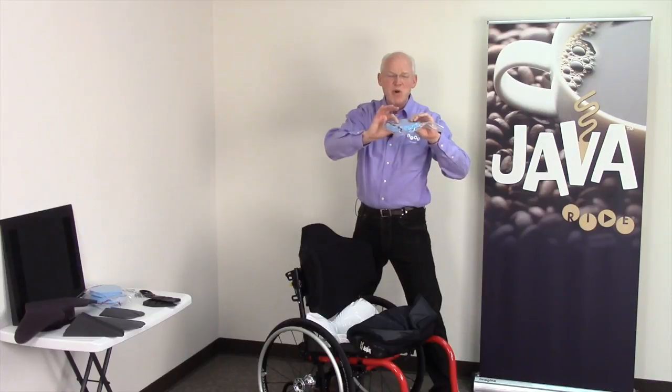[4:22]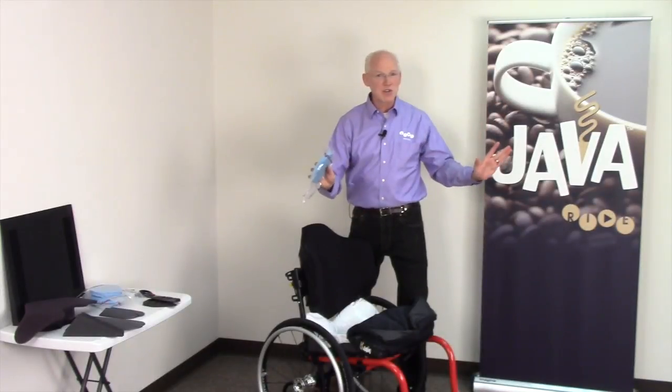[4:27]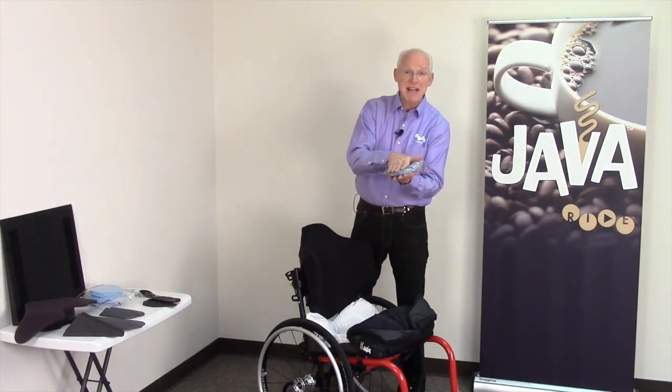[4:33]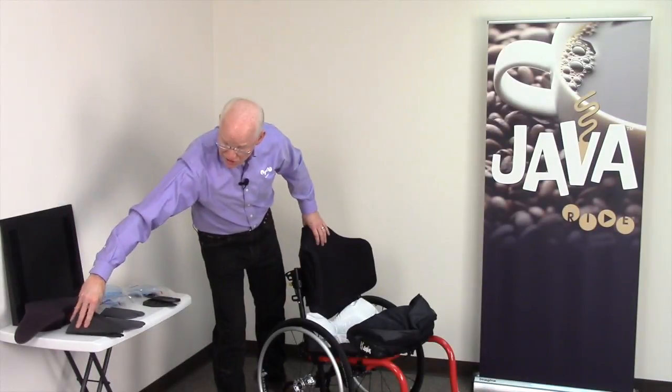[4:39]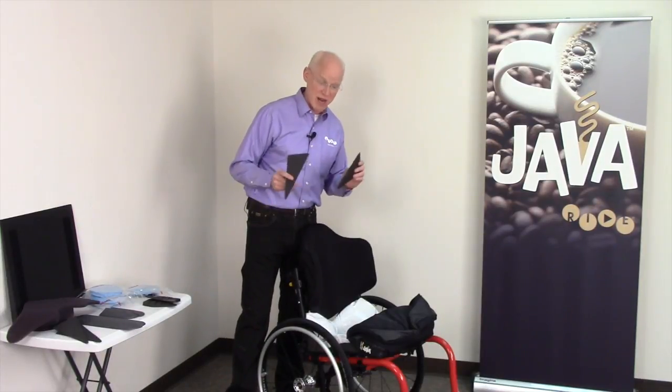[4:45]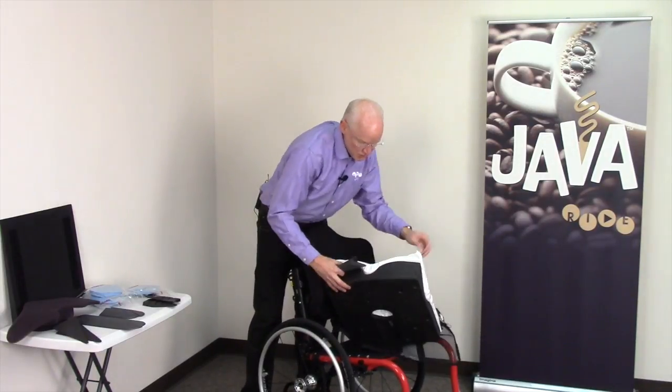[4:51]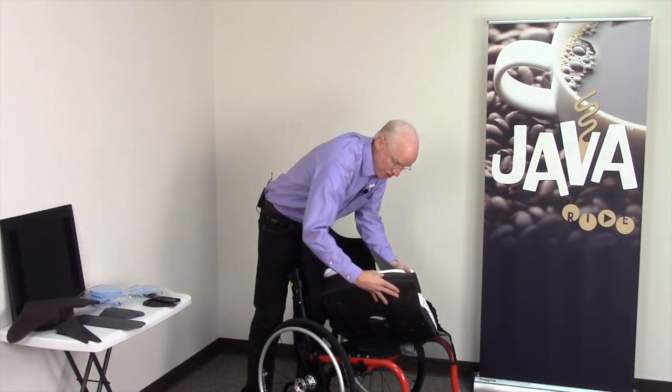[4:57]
The gauge is 3/4 inch thick. I don't want to see any imprint, or at the very most, just a very, very mild imprint into the gauge. Right now, everything looks great for Ryan. But let's pretend that he in fact did make contact with the gauge, that he is sitting too low or possibly even bottoming out. The Java cushion comes with a pair of what we call CAM wedges, contour adjustment mechanism wedges. And what you'll do is you'll simply go to the back corners of the cushion and insert a pair of these wedges.
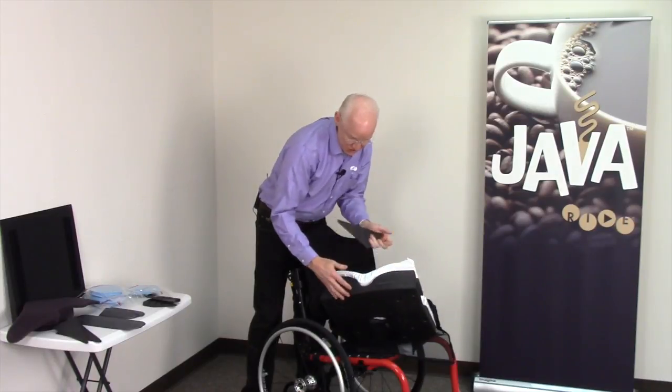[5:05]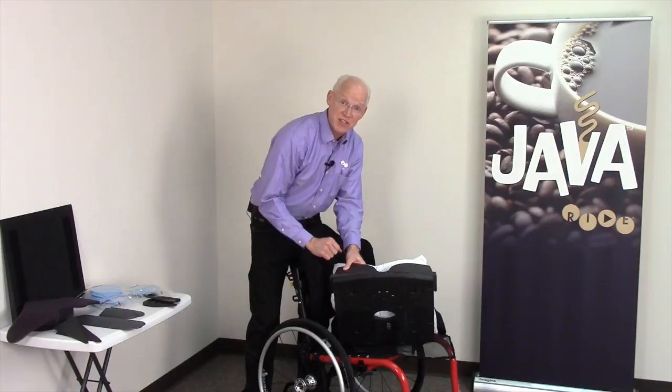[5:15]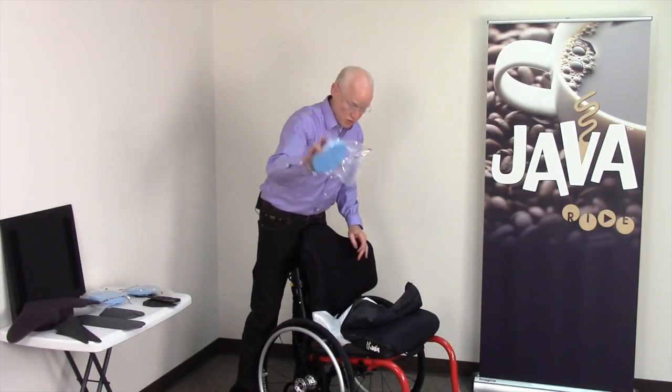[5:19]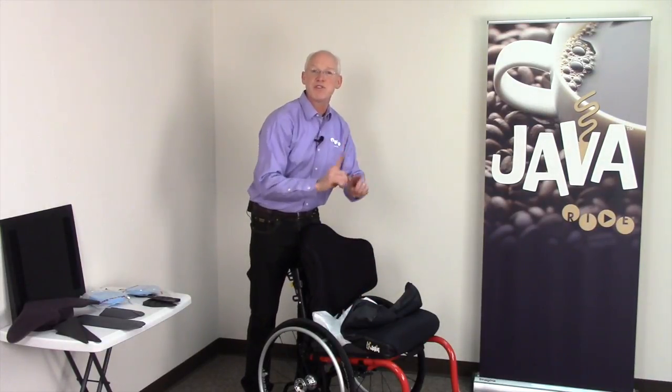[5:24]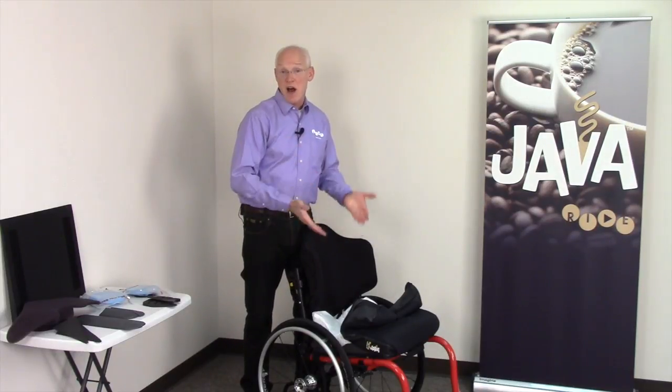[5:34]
The CAM wedges are a one-size-fits-all accessory, and you'll see that it hangs over the side there when I put it in there. You're simply going to cut those to width with a pair of scissors or an electric knife, if they're in fact needed. I'm going to leave them whole for right now for the assessment. So I've put a pair of CAM wedges in there. The cushion comes with two gauges, so you can put another gauge in, replace the cover, go through the same procedure again. Get them back on the cushion, check trochanters, coccyx and sacrum, perineum, get them off the cushion, and then establish that he's in fact offloaded.
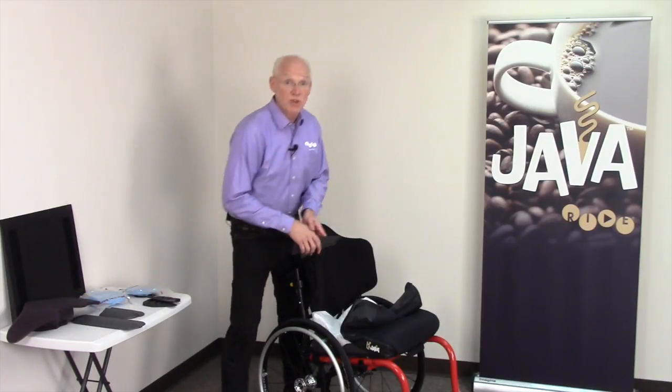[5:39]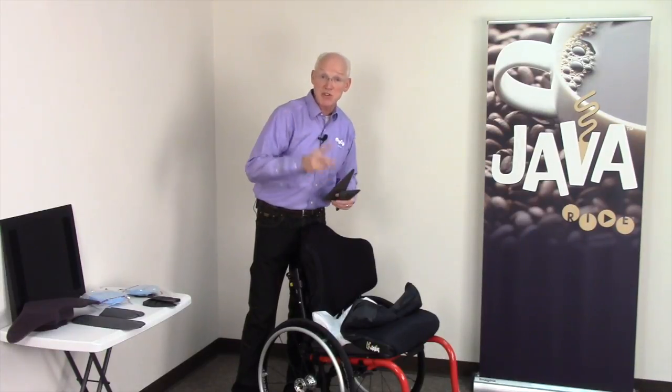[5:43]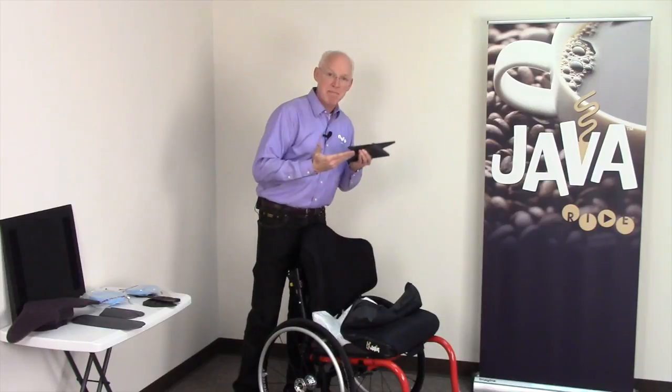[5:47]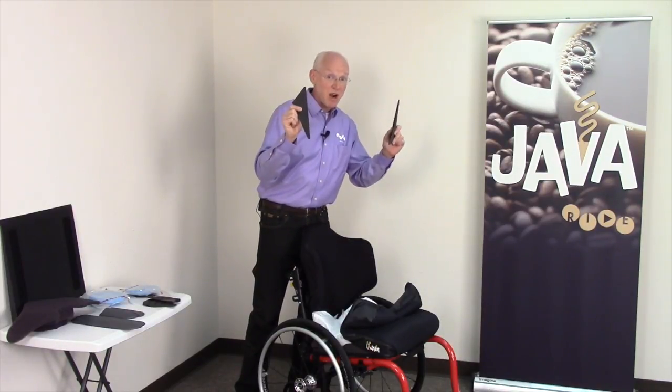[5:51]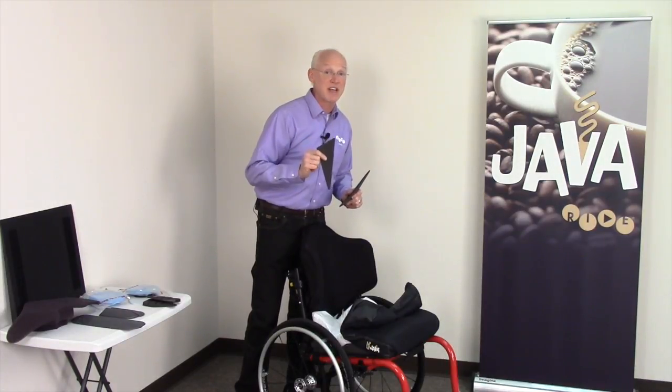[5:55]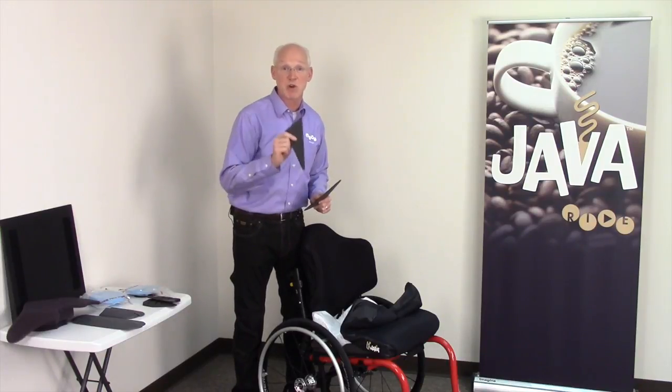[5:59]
If he's still too low, go to your evaluation tools and get another pair of wedges. You can do at most two on each side to tighten up this contour and get him up off of his ischial tuberosities. If two pairs of wedges do not sufficiently offload them, you want to call Ride Designs because you want to be considering the Ride custom cushion instead for a higher level, a more specific level of protection. Okay?
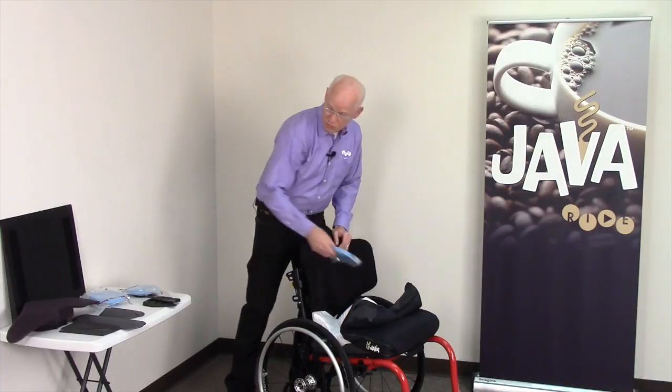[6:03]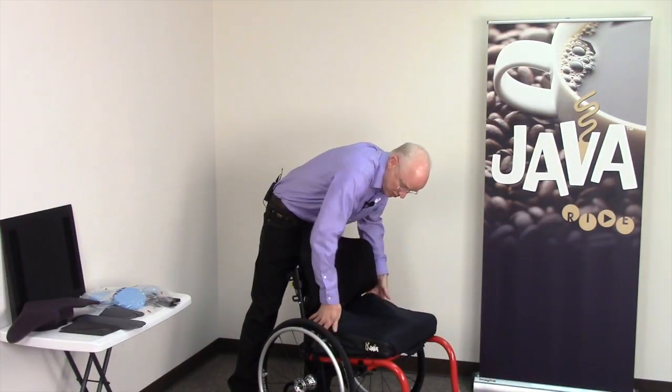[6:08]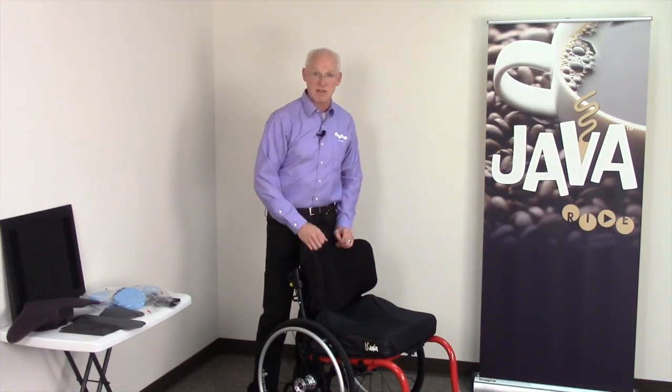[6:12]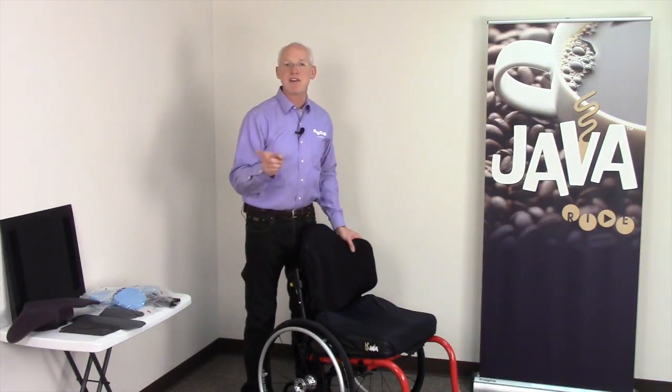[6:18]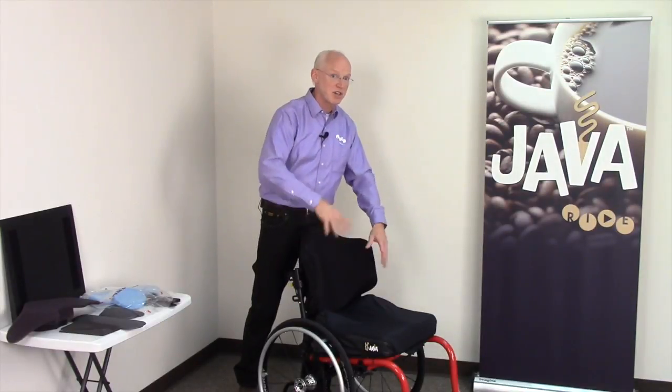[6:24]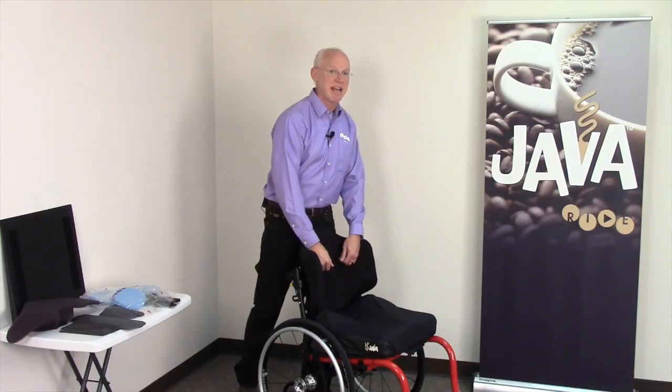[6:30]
Once we have the cushion properly configured and we've got them offloaded, we've verified the offloading qualities of the Java cushion. The next thing we need to do is verify the loading qualities of the cushion, and that's going to be done with skin checks. Review, on the cushion, feet and back, trochanters, coccyx, sacrum, perineum, check and adjust for bottoming out. Then begin your skin checks.
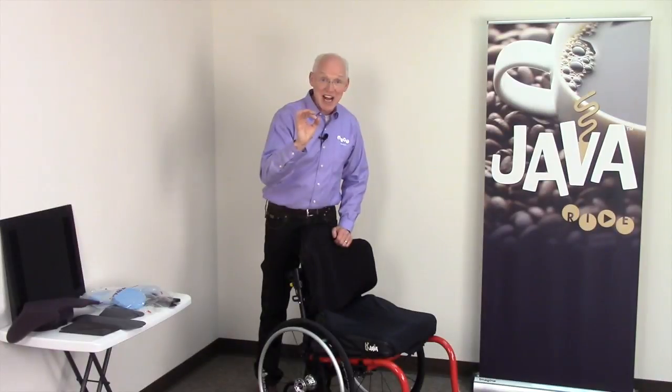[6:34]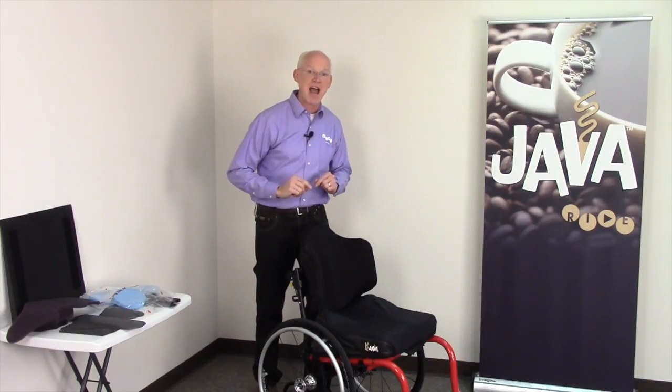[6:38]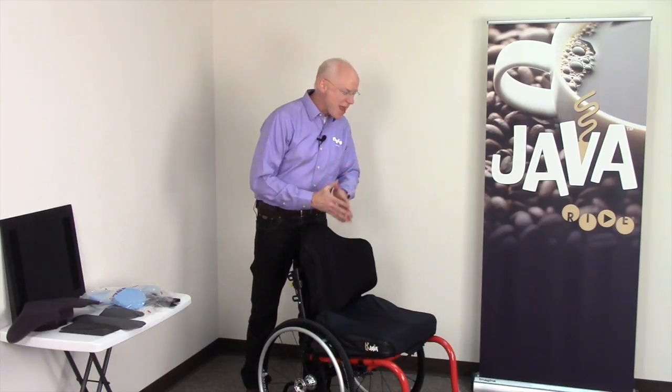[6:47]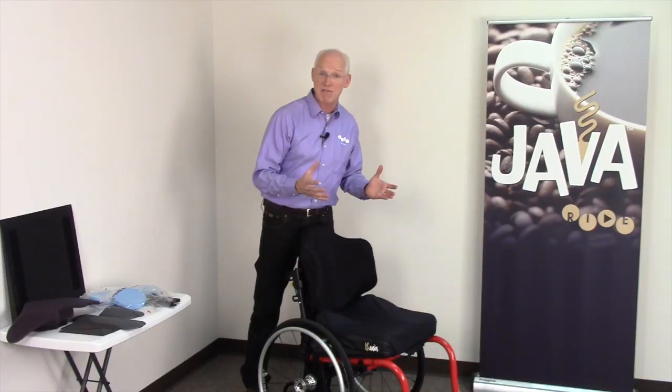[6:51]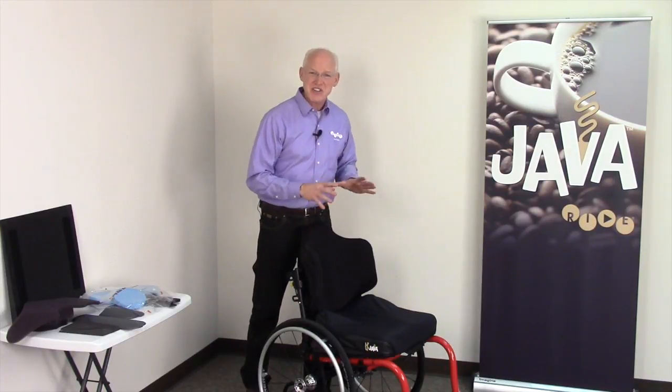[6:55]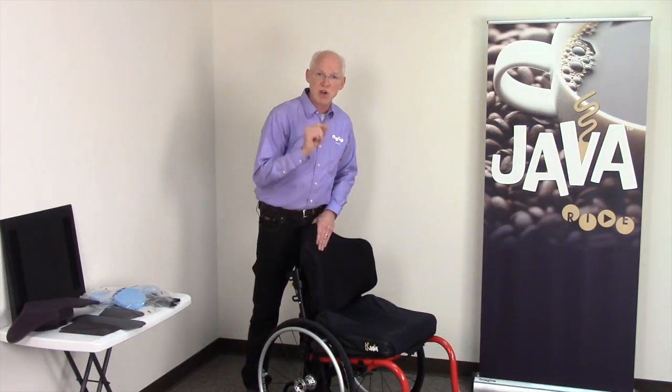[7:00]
Now, the Ride concept of support is the idea of taking all the forces of support away from the high-risk areas. And people with sensation, when they sit on a Ride Designs cushion, feel those unique contours. In most cases, that's perfectly fine. They feel just fine, in fact, very comfortable. But there's a small group of people who, when sitting on these contours, feel that it's just not really comfortable. These are typically your lower risk clients.
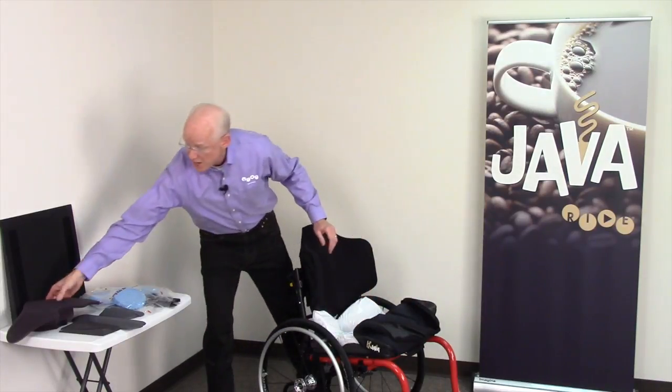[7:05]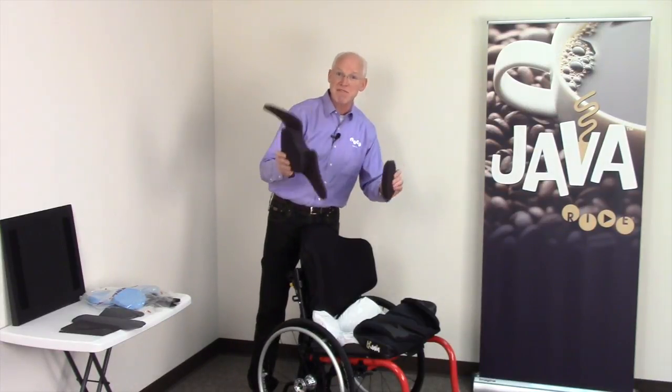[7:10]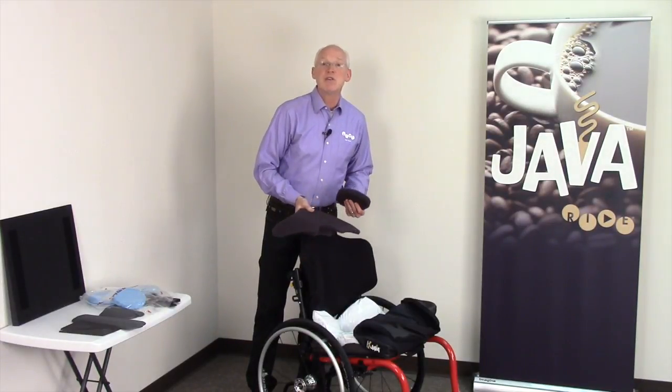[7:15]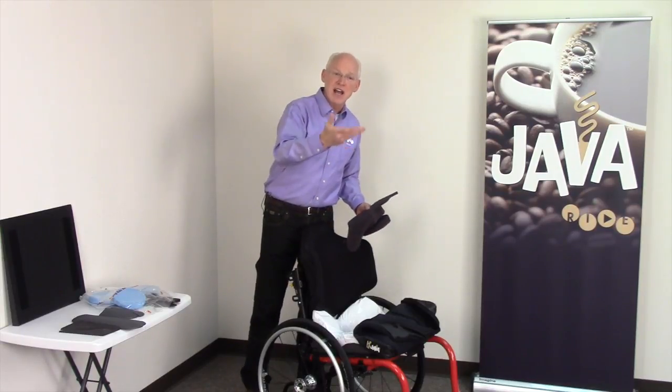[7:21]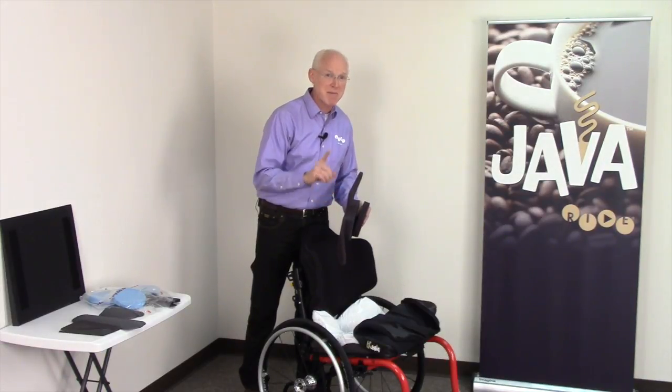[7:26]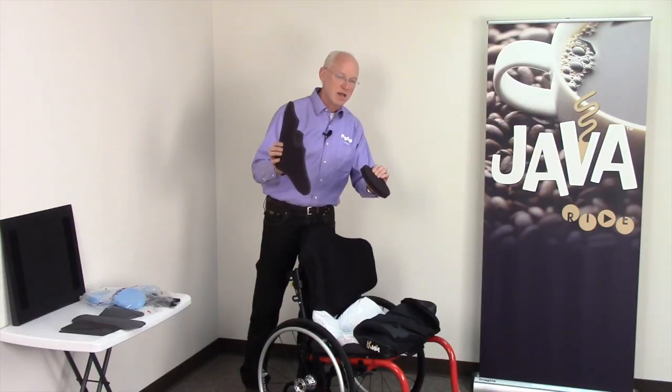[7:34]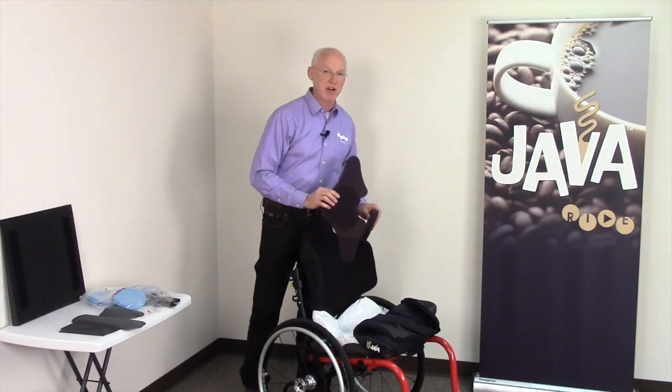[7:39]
And what we're able to do for those folks that want to feel a little bit more comfortable is introduce what we call the well inserts. These well inserts are a washable reticulated foam that can be placed into the well to provide some gentle support to the bony prominences. What this effectively does is take away that feel of those transitions from loading to offloading. It's very effective at making for a very comfortable cushion, and interestingly enough, in the university level research, even when we add gentle ischial support, the cushion outperforms the industry standard in pressure distribution.
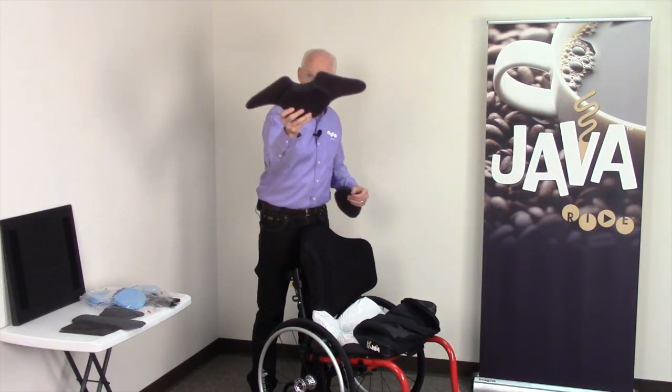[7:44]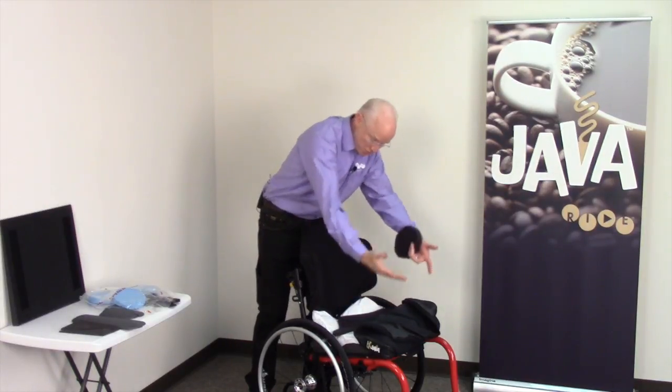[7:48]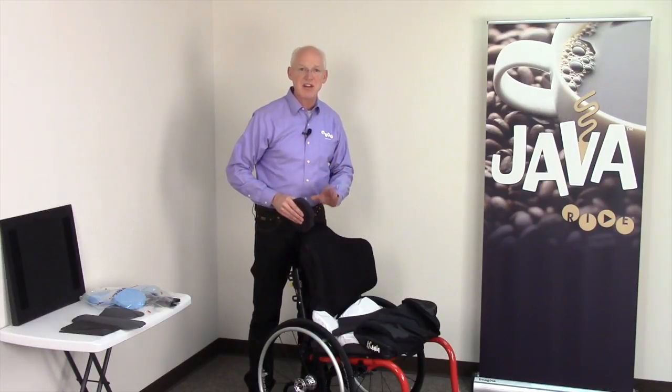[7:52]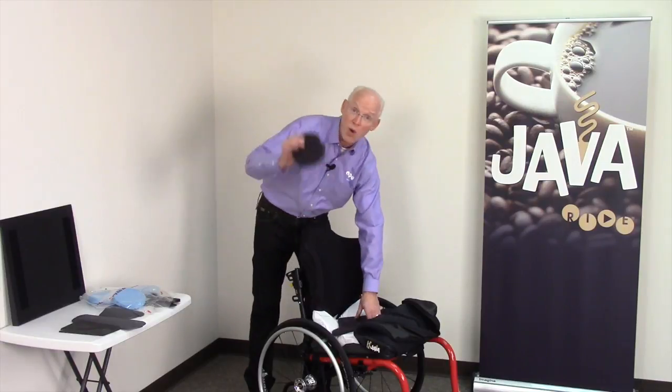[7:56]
So, we can start with just the top insert, place that in the well, put the cover on, and have the client sit on the cushion. Ask the client, does that feel better? Yes, it does, or no, it doesn't. We can always add a spacer and introduce some more.
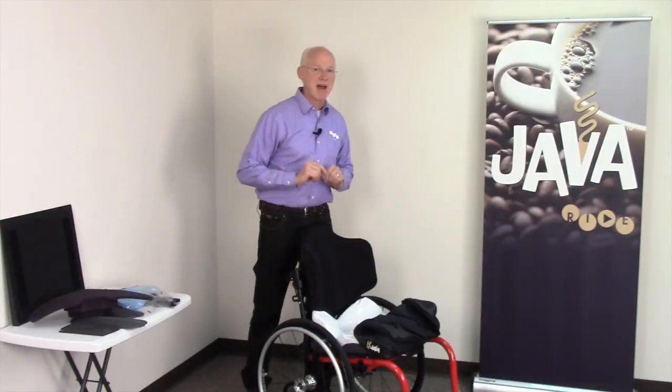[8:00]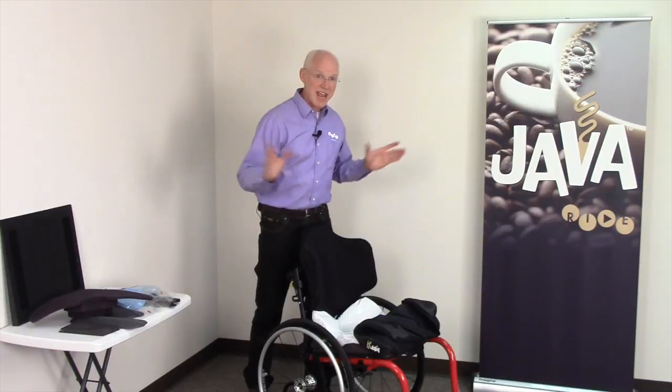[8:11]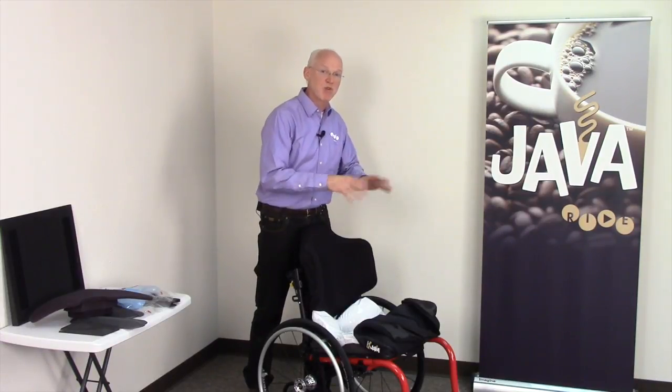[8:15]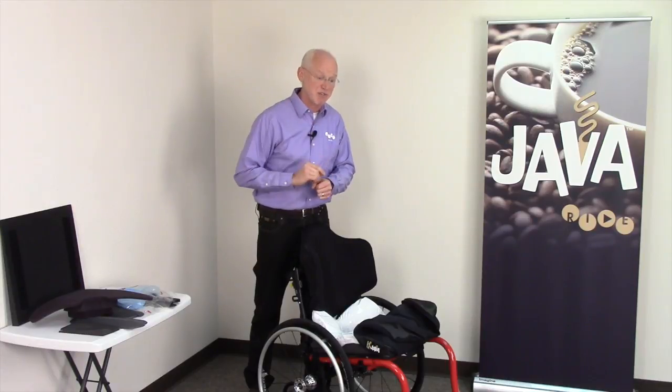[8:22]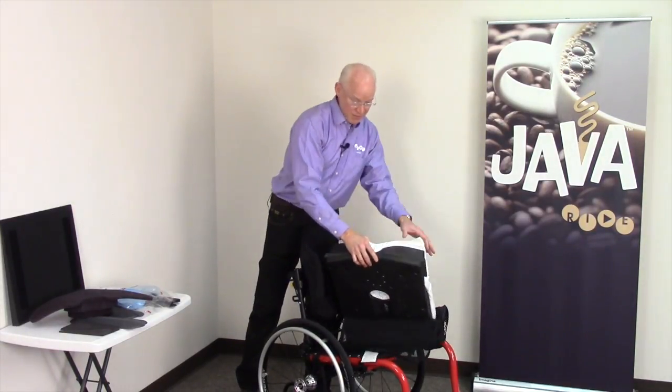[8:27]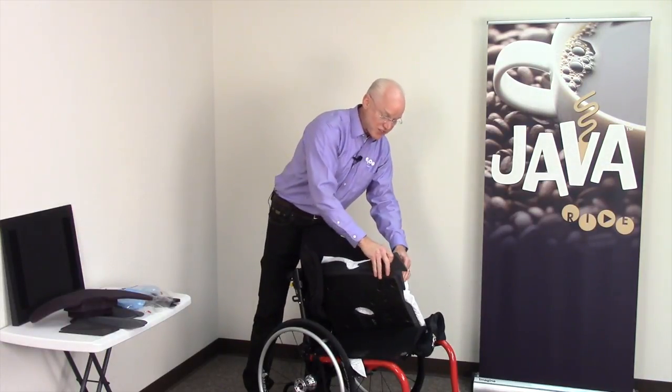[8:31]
Okay? Let's talk about now postural alignment adjustability. Our first two adjustments dealt specifically with wound care or skin care and comfort. We used cam wedges to offload Ryan. We used well inserts to make Ryan more comfortable. Now let's say Ryan presented with a mild obliquity. It's flexible and tolerant of correction. What I'm able to do with the Ride Java cushion is use the cam wedges asymmetrically.
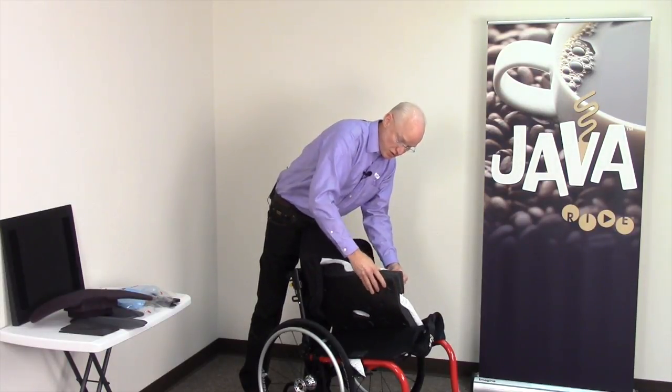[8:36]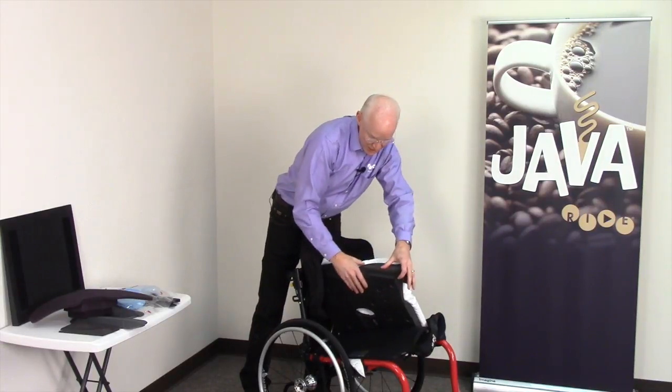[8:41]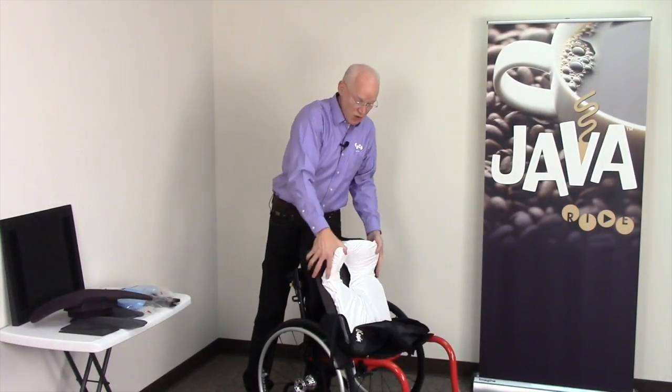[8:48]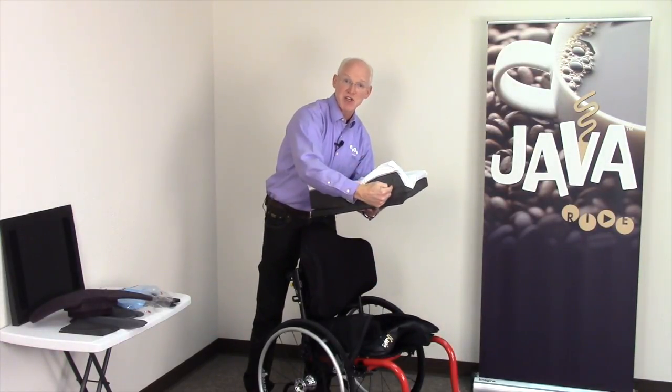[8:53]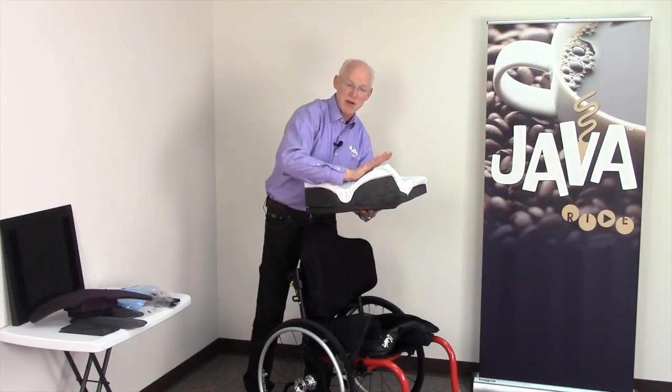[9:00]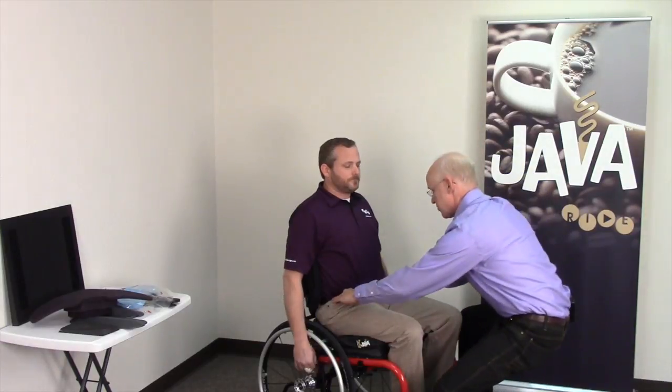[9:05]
I can use, again, up to two wedges on one side. By doing that, I provide a nice lifting support on the low side of the pelvis. Right side of cushion, this would be a right obliquity, low on the right side. I insert some wedges, assist Ryan onto it, and see if he sits level. I can then come in, establish if we did in fact level his pelvis.
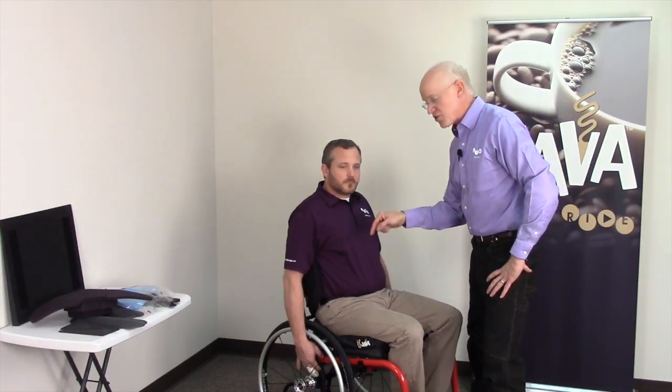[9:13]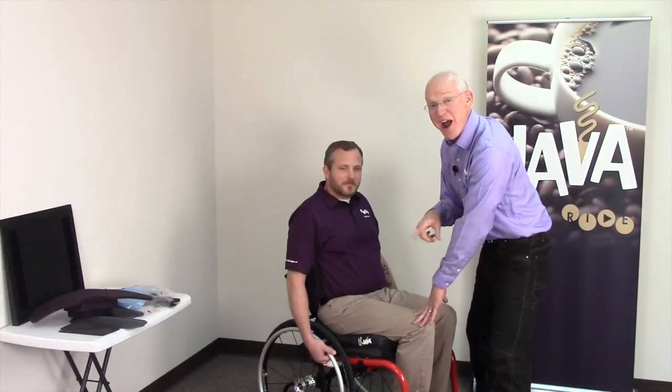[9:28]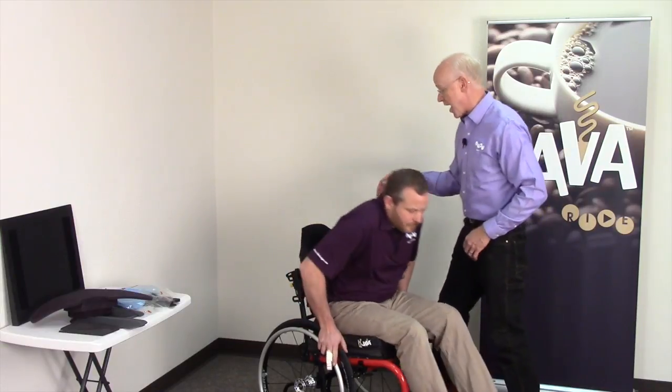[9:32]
If this obliquity does not correct on the Java cushion, and if he's sitting low on the low side, like the ischial tuberosity may be bottoming out, and you can't get it corrected on the Java, you just justified a Ride custom cushion. You need to capture the shape and accommodate that obliquity. And I'm going to show you how to adjust the front of the cushion for leg support. So Ryan, if you just pop up off of there.
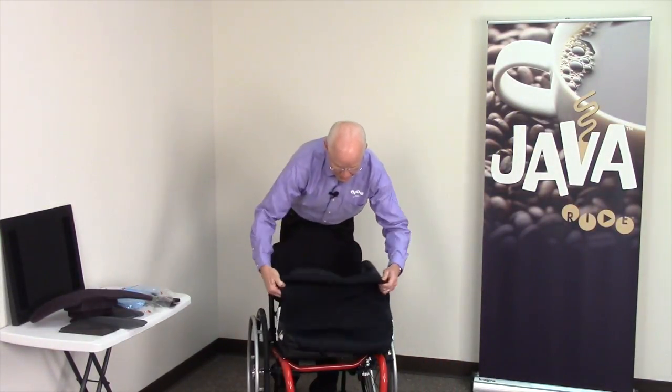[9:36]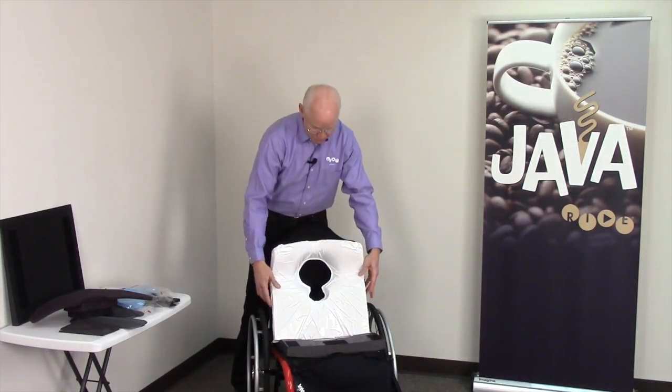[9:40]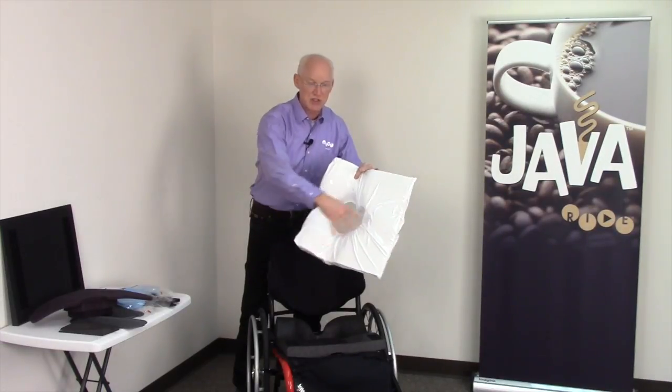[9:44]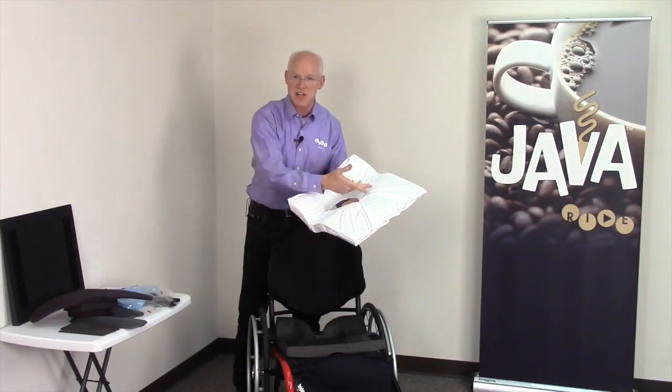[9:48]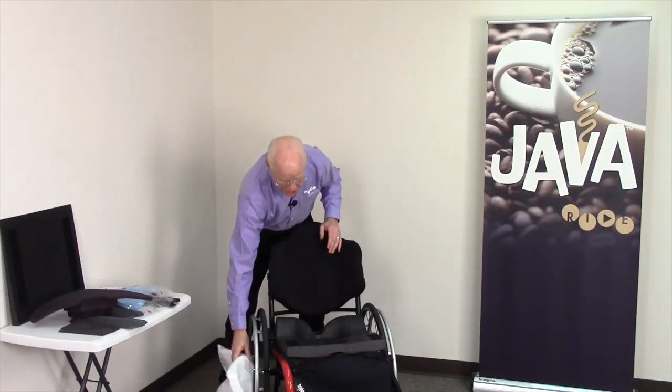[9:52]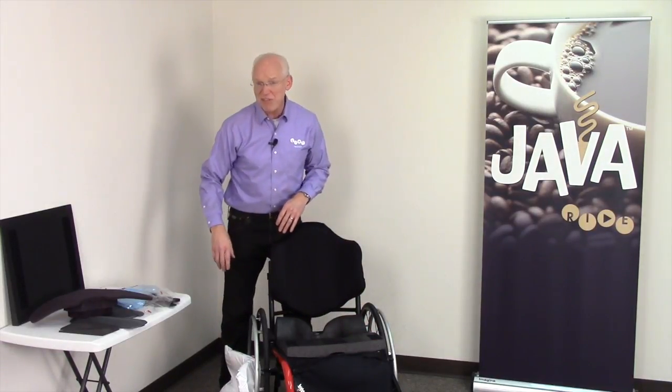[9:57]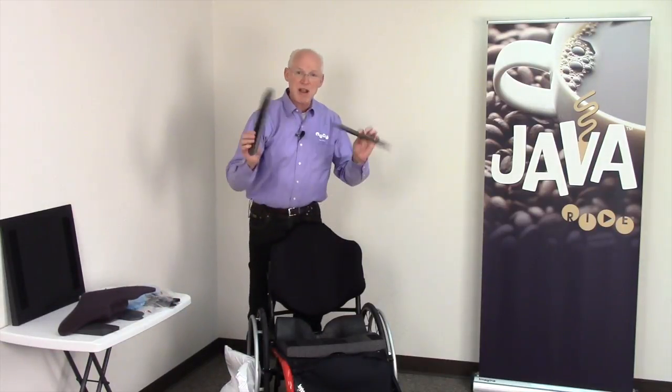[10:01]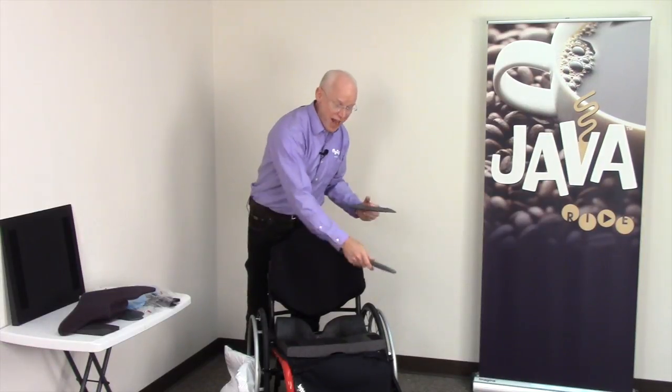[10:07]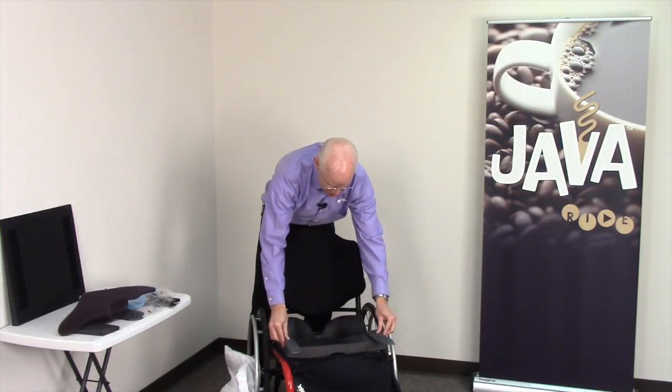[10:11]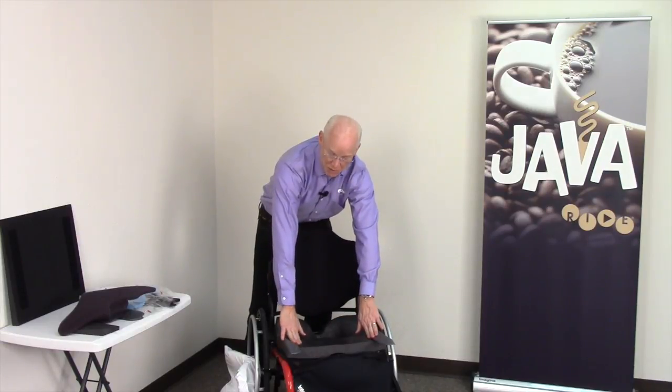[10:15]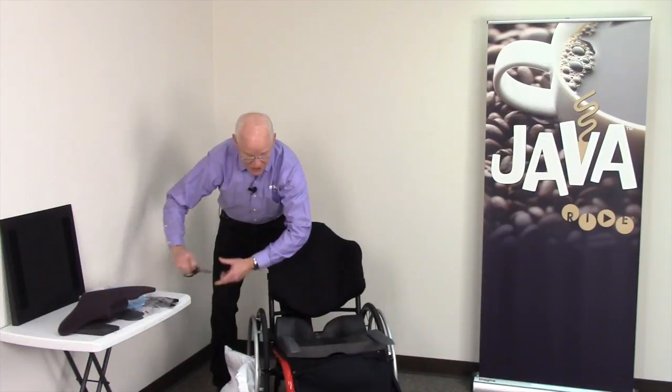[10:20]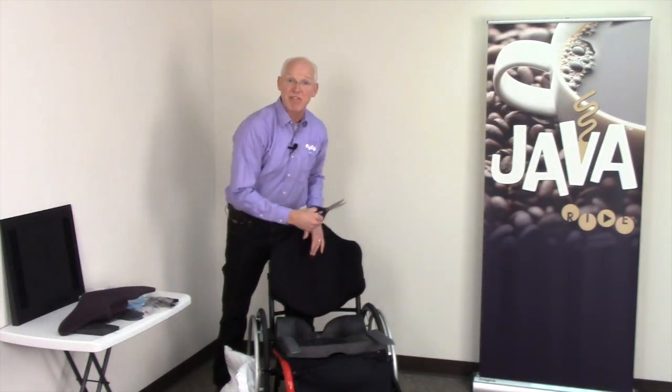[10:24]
The top foam component of the Java cushion is sealed in an incontinence-proof cover and should never be compromised. You should never cut it or modify it. The base can be washed, wiped, whatever you need to do, but also has the places in which medial and lateral thigh accessories can go. Like the cam wedges, your medial and lateral thigh contours are a one-size-fits-all device. If Ryan needs lateral thigh contour, I can place these on the cushion in the lateral thigh contour area, and then use an electric knife or even scissors. Even scissors on this foam will typically allow you to cut right through that.
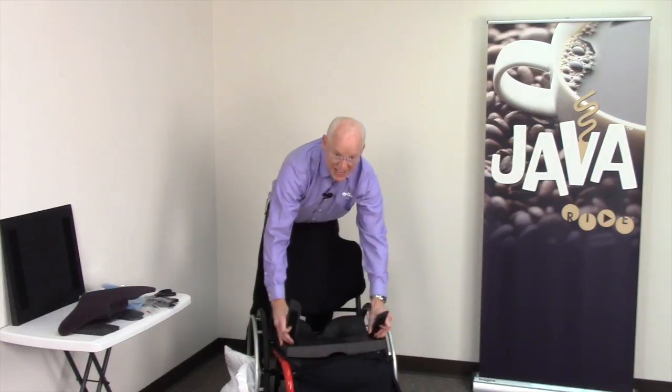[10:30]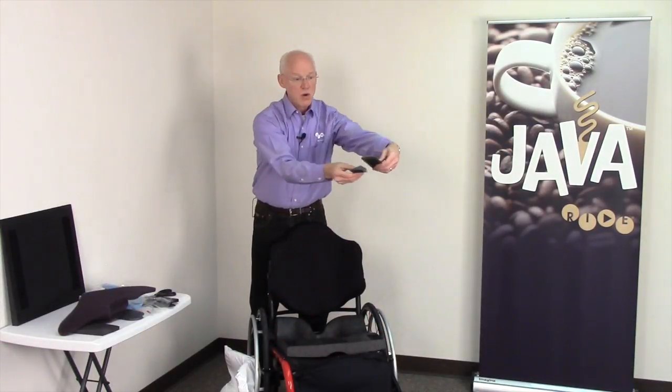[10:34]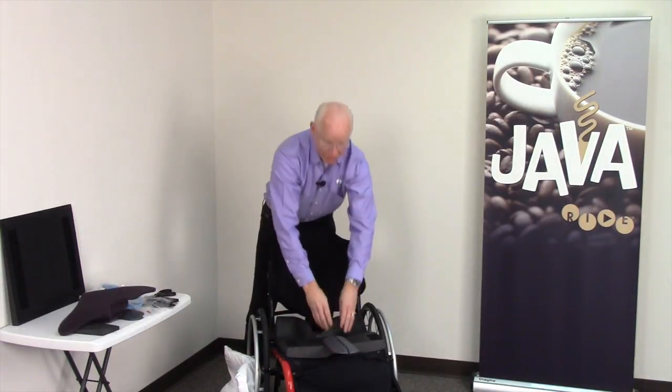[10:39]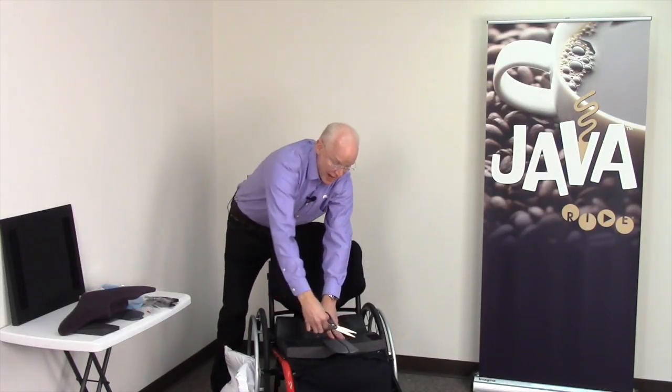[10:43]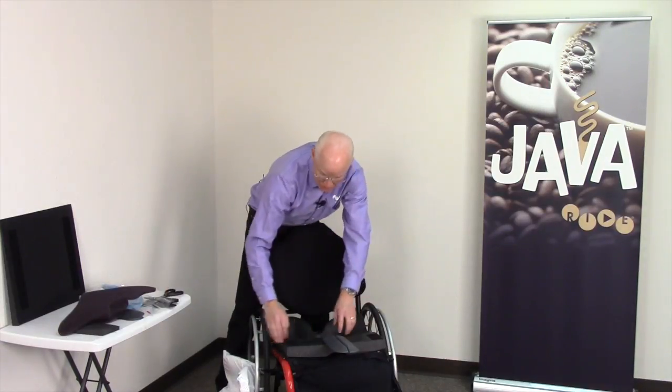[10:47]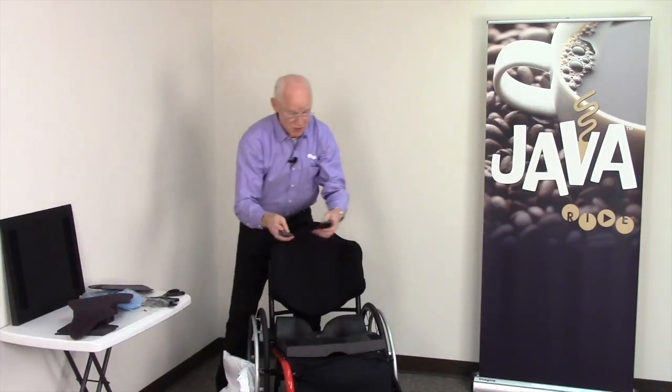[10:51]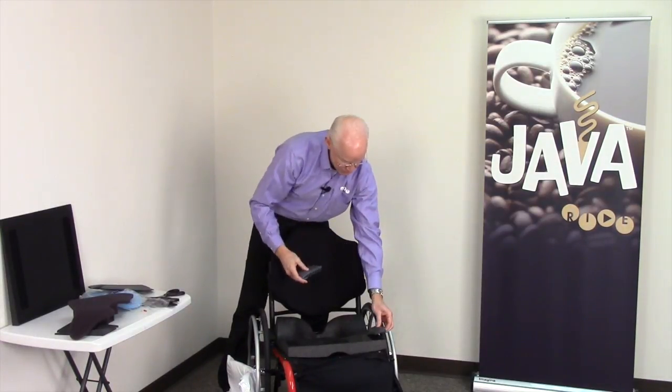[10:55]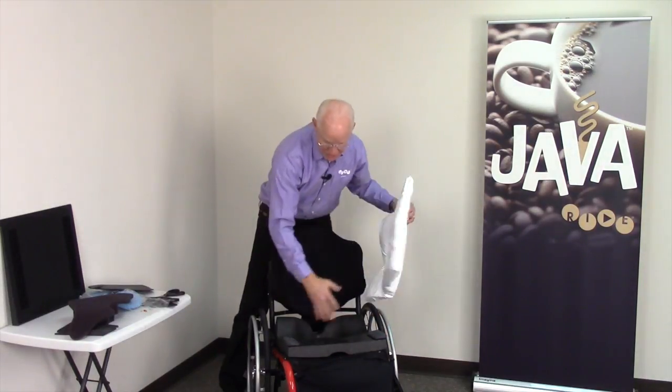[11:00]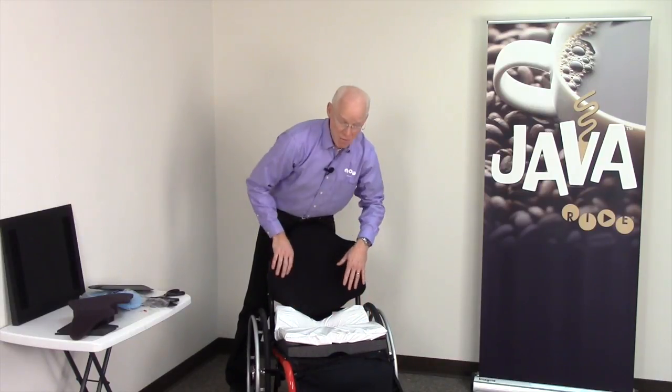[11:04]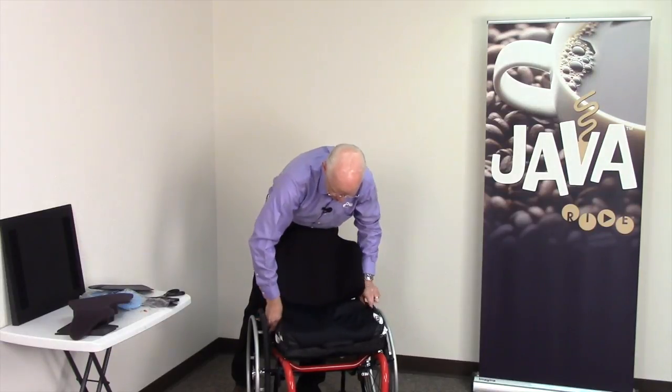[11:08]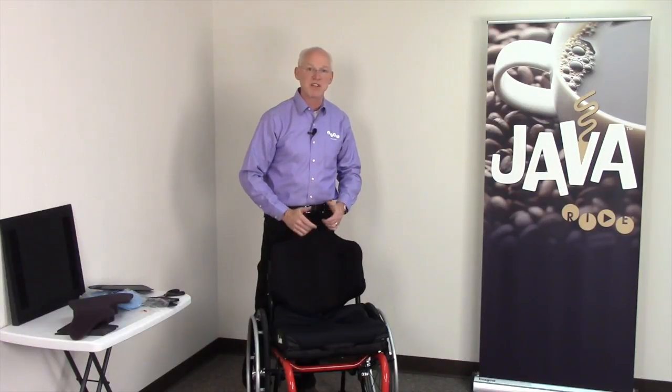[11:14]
You'd cut those to length. That's for lateral thigh contour. Interestingly enough, the lateral thigh contours, when moved back to back, become the medial thigh contours. Again, you put them on the medial part of the cushion and cut them to length if they're determined to be needed. Okay? Once your supports are trimmed to the right length, whether it be medial or lateral, I will put the top foam back on, replace the cover, transfer the client back on, and again, continue your sitting protocol, watching the skin and watching postural performance.
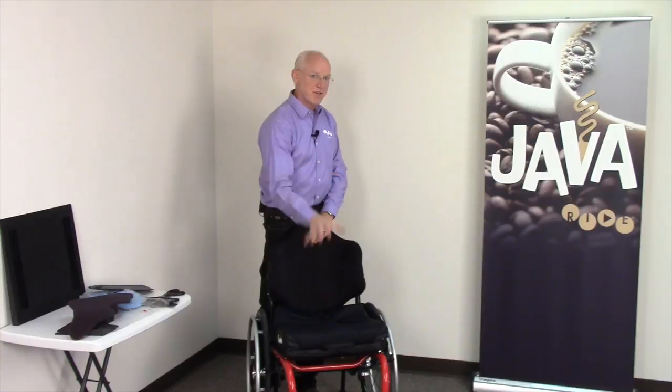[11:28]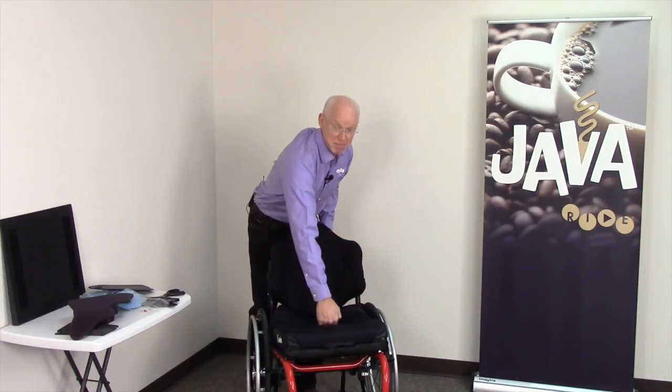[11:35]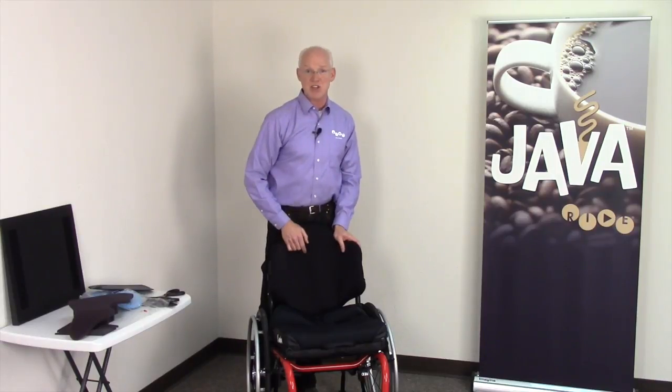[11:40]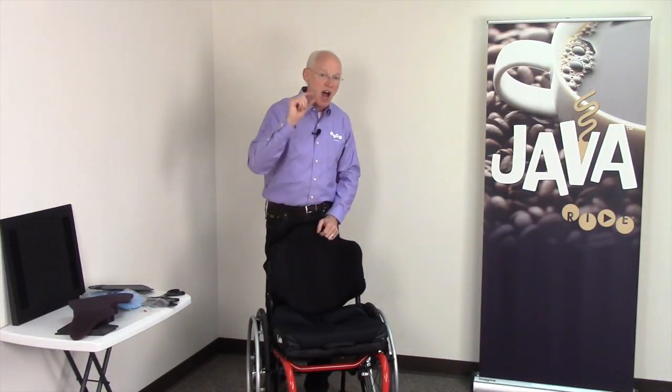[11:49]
Okay. So quick review, fitting the Ride Java cushion on the chair correctly with gauge. If you're not going to use gauge, you've got to be willing to get in there with your hand and check for ischial clearance. Client onto the cushion. Make sure foot support is good, back support is good, trochanter position is good. Trochanters, coccyx and sacrum, perineum, and then ischials. Palpating the ischials or checking the gauge. If he's too low in the well, use your cam wedges, up to two on each side to improve offloading, to get him a good half to three-quarter inch off of the well.
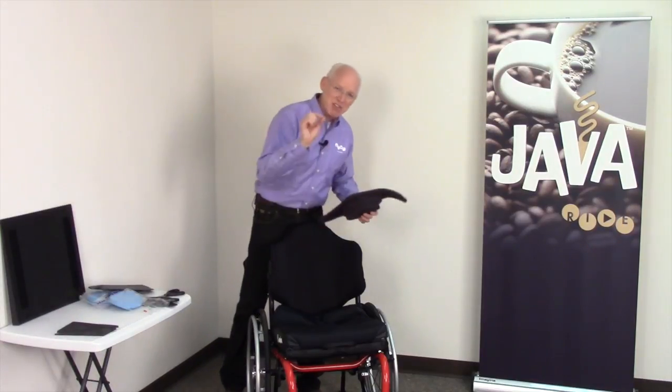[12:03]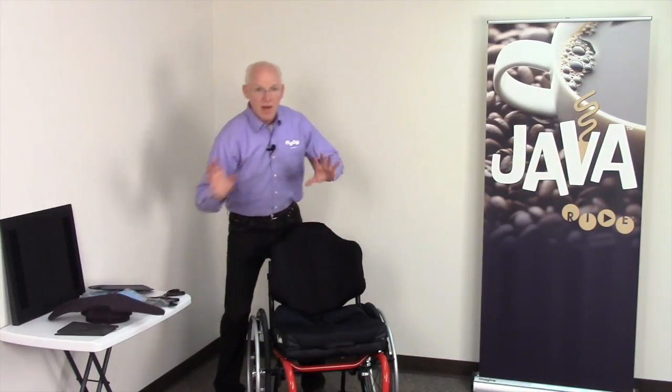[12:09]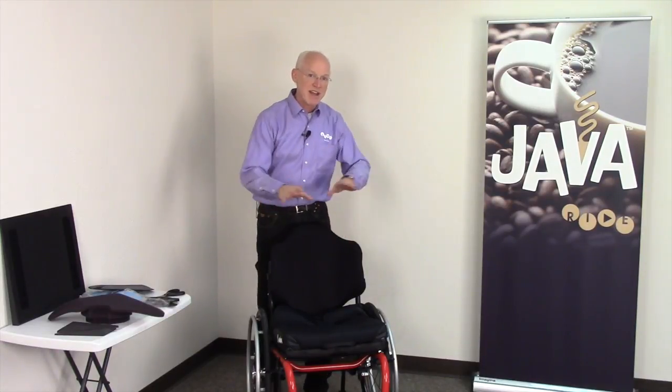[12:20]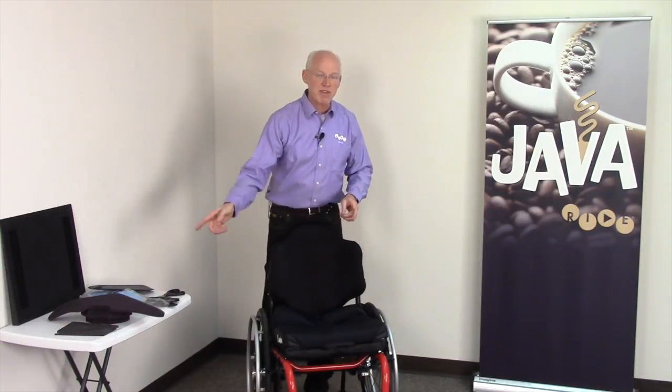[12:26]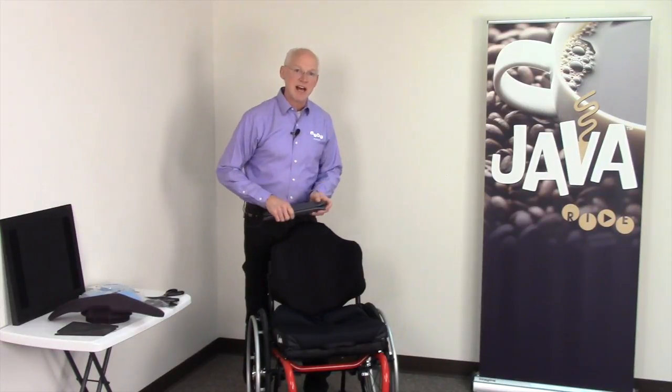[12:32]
Once you've adjusted for offloading, you move forward with your skin checks. If he's sitting on the cushion and doesn't like the feel of it, compromise the performance ever so little by adding well inserts to improve comfort. At that point, move forward with your skin checks. In the event of a mild obliquity, you can use the cam wedges asymmetrically to help level the pelvis. In the event of lower extremity challenges, abducting, adducting, wind sweeping, work with the medial and lateral thigh accessories to optimize leg alignment.
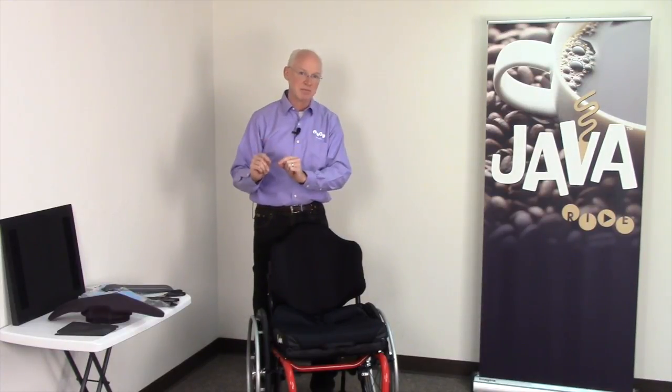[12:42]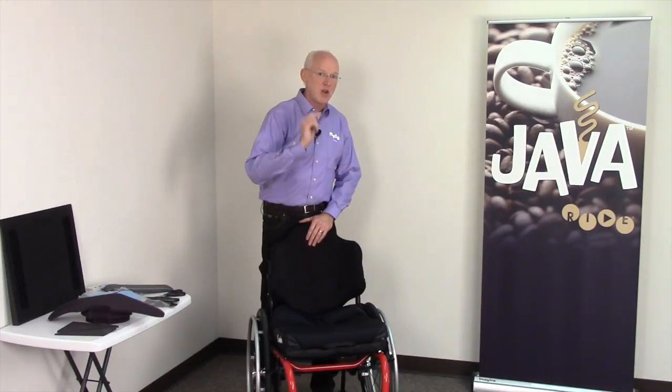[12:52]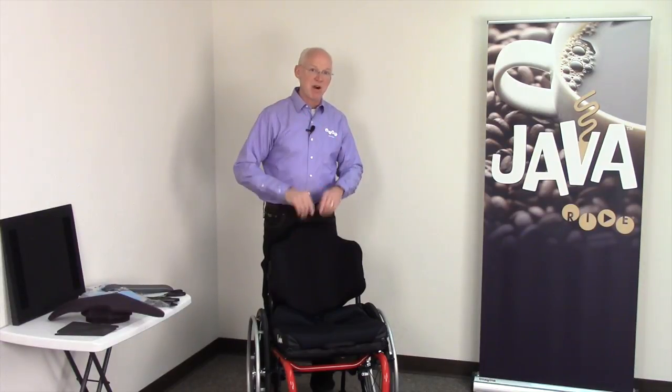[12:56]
If you are not getting the postural alignment, correction, offloading that you're looking for, you need to consider and justify custom. You've chosen Ride as the ultimate in postural and skin care. If the Java does not give the fit you're looking for offloading and loading, you have just justified custom. In part three of this series, we will teach you how to optimize the Ride Java back for fit. Thank you very much.